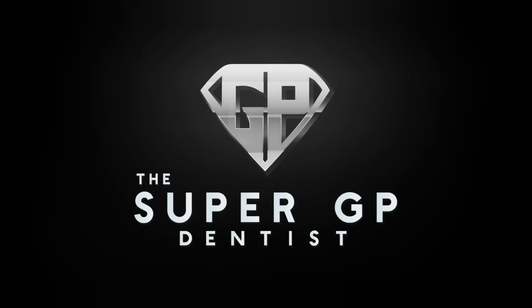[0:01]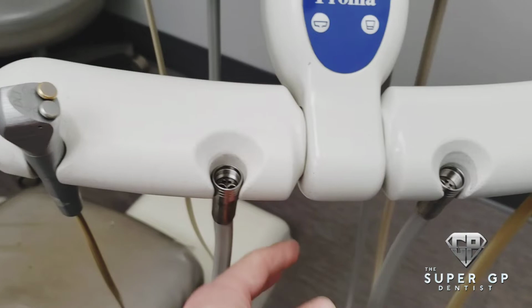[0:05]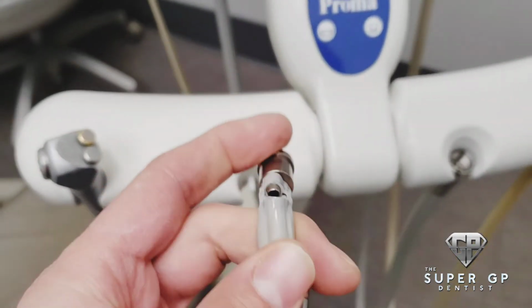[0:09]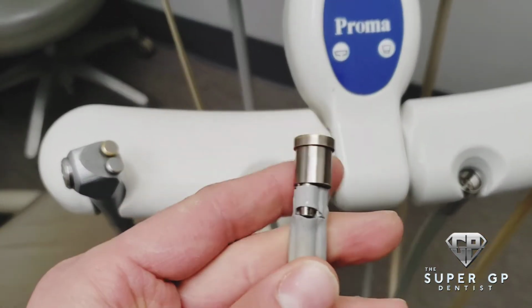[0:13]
I'm going to show you guys how to do a quick repair here. This is a very common problem we have at the office. You have your high-speed handpiece and the tubing breaks apart here, just like so. We're going to go ahead and show you how to repair this today.
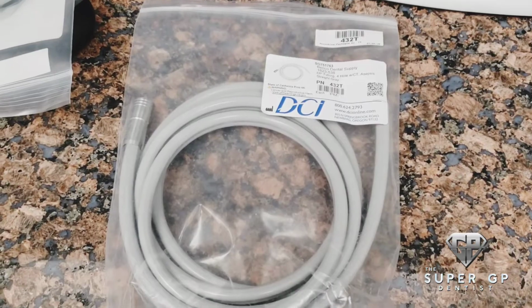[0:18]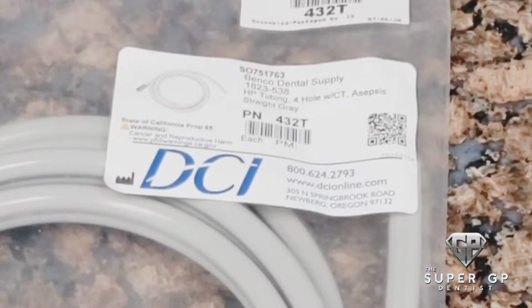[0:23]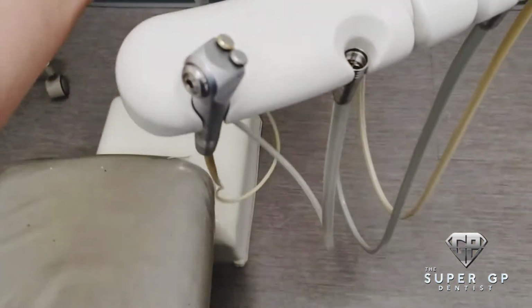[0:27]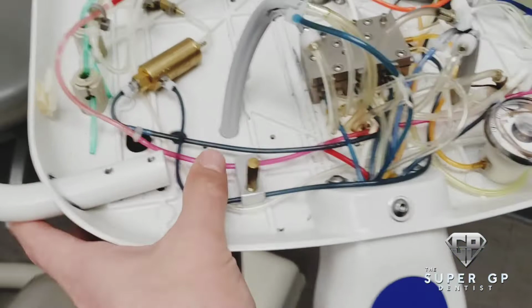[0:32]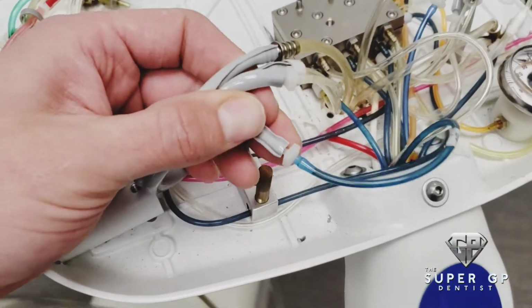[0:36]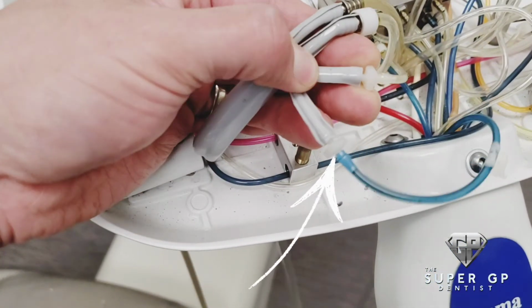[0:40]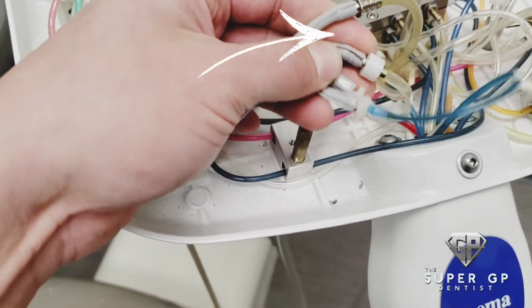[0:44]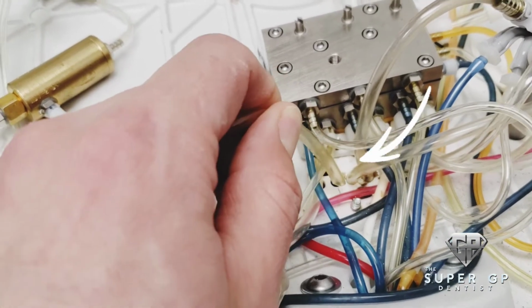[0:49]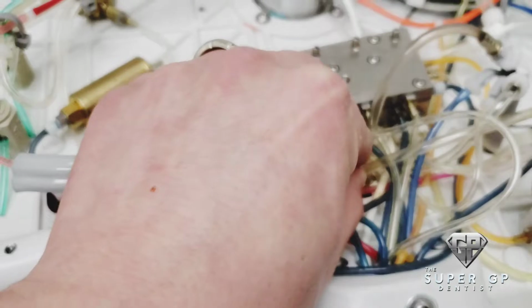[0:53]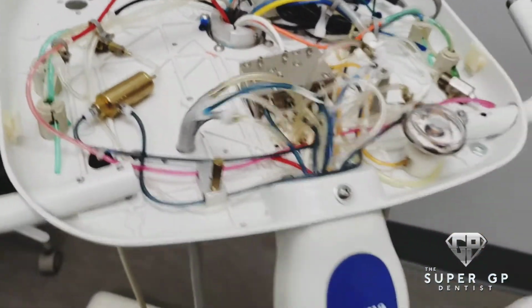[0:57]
So what you want to do first is take apart everything. You pop the top off your delivery unit, and then you have all the little tubes ready to go here. You want to be really aware of where each one goes when you plug in your new unit, because you have one for water, one for the air, one that goes directly to nothing for exhaust, and then one that plugs back into that little metal box back there. You can see it goes to nothing there, basically. It's just for the exhaust. So we're going to take this all apart, and then we'll plug in the new DCI tubing there.
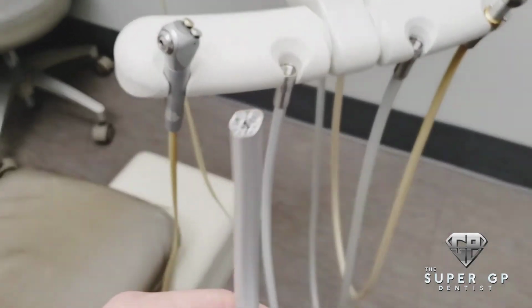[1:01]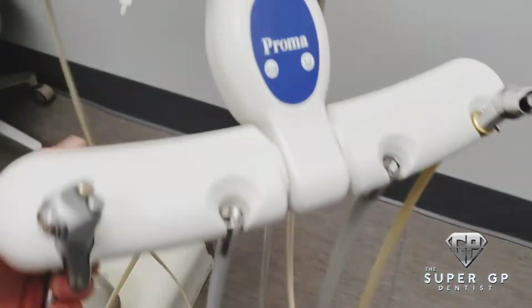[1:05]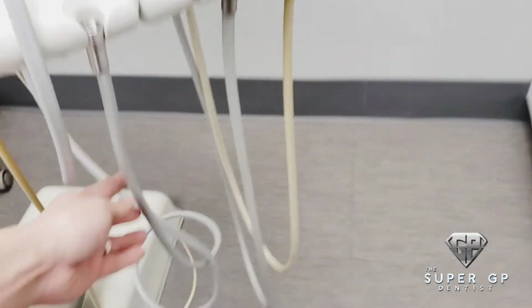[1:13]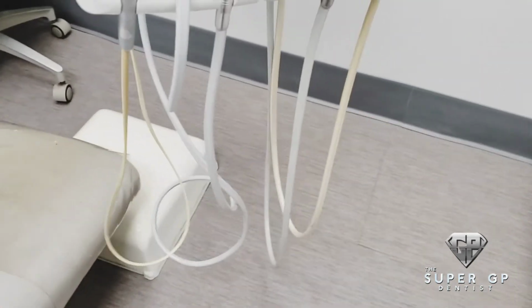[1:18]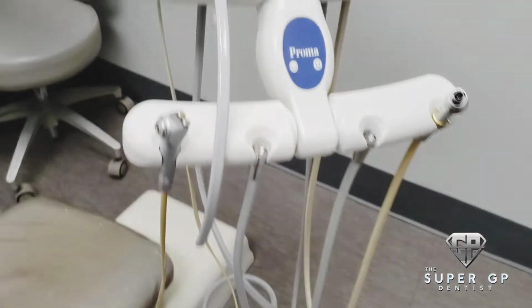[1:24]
So we've got the new tubing in place here, and you can see the four hole tubing that we're going to put back into the unit. It comes extra long so that you can control exactly how long you want the tubing to be. Here we want to be aware of the tubing length, because you want to match the tubing to what you have adjacent to the other tubing. So you want to keep it kind of the same length. Then we'll go ahead and cut the tubing here.
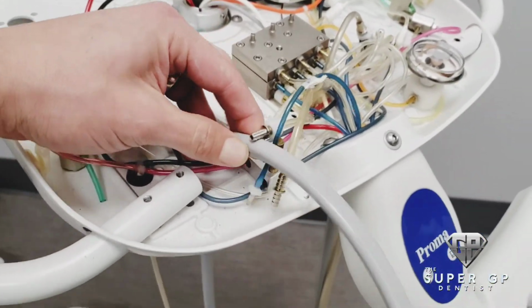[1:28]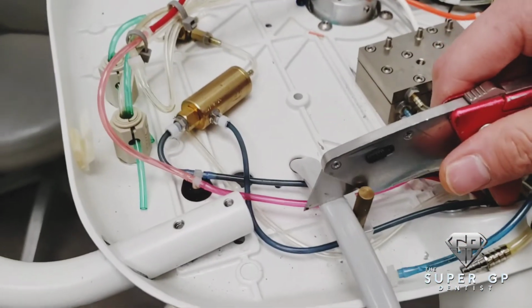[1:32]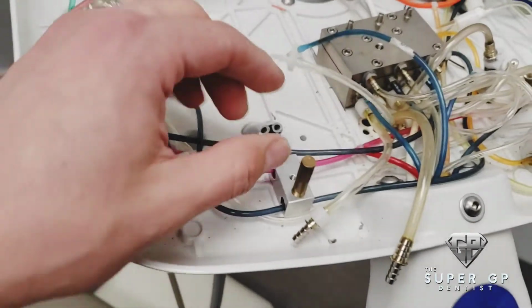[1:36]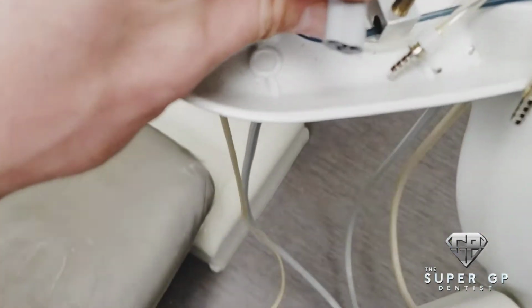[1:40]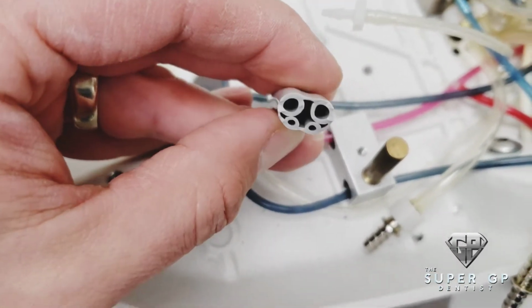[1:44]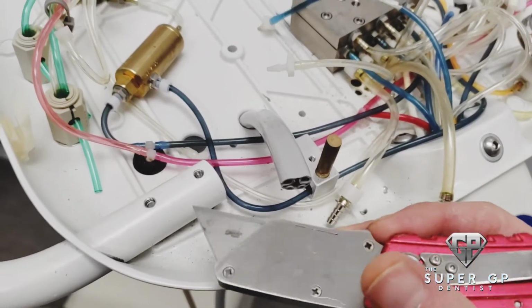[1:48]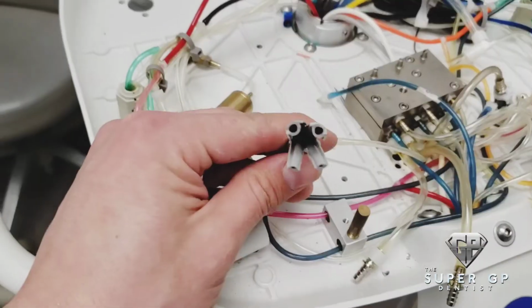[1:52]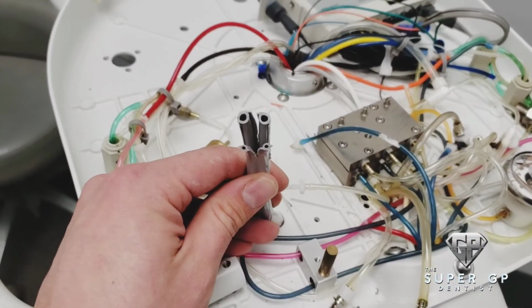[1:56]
The only thing you're going to need for this job is a utility knife. So you go ahead and cut through at the length that you want, and then we'll show you what we do next here. Here we're going to cut vertical slits on the tubing, vertical and horizontal, to separate this. So you'll see right here, vertical and horizontal. It's hard to show being one-handed with the camera there, but you'll see. So we got the four openings there, and then we'll plug everything back in.
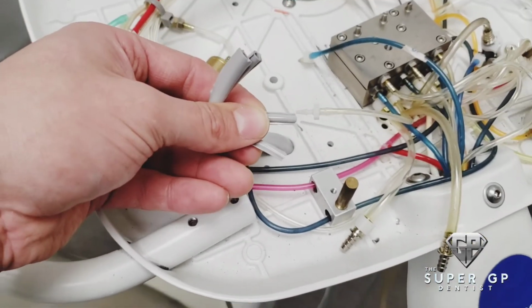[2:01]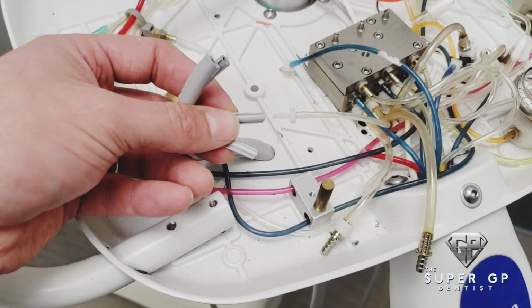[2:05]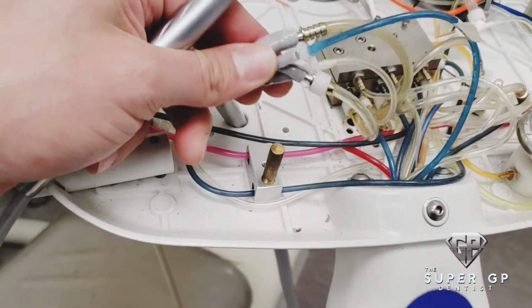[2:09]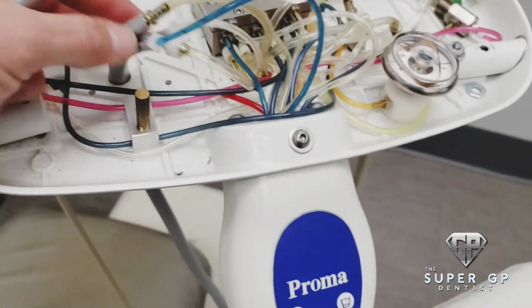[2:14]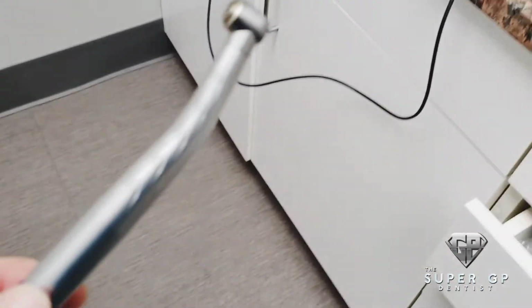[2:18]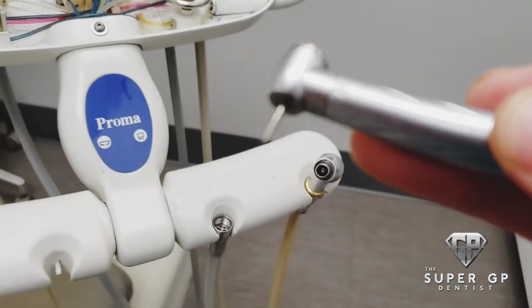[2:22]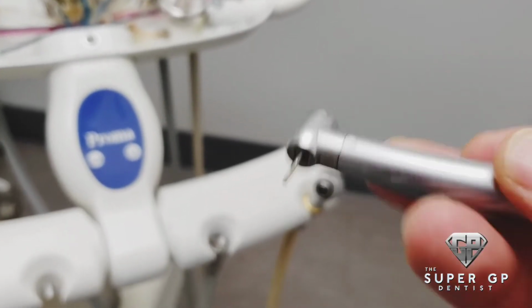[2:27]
We'll put everything back together, and then we'll go ahead and show the finished repair here. You just got to be really aware of where everything goes back in place from before. You'll see everything's back in place, and now we just check the handpiece. You want to make sure that you get the same amount of torque as you normally would with your handpiece, same amount of water that you were normally going to get. I think this is a little too much, but we can see the handpiece is back together again. Everything's working, and the torque is there.
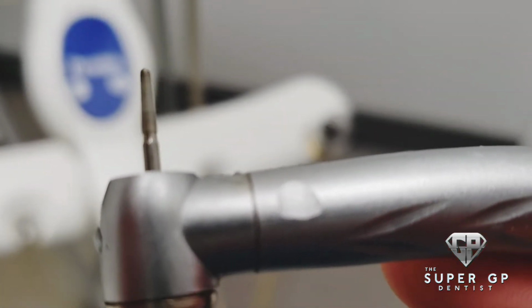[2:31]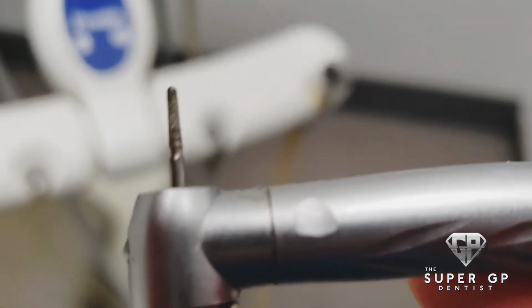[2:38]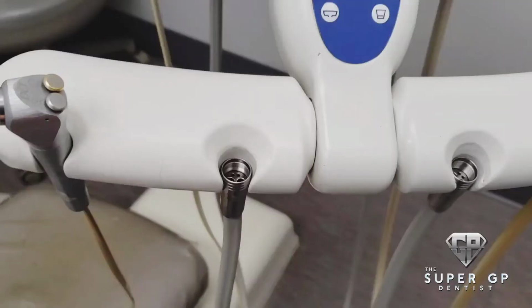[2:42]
And this is a simple repair that anyone could do in the office. It costs 20 bucks to repair and do it on your own. Hopefully this helps you guys out in the office. Commonly you get the repairman to come out and spend a couple hundred dollars on something very quick to fix here.